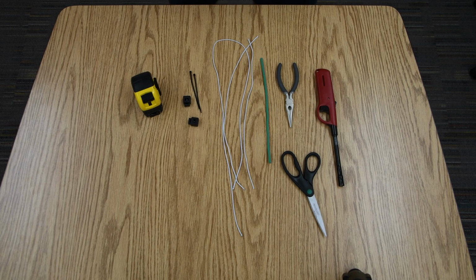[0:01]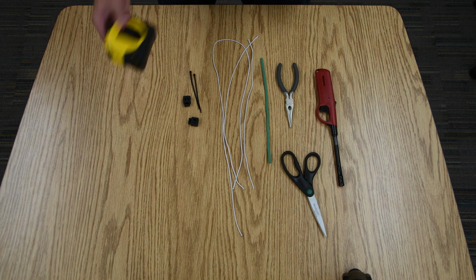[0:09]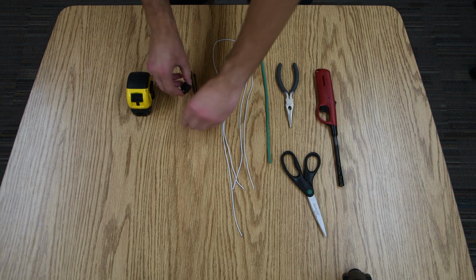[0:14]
Today, I'm going to show you how to make a homemade fitter for a disposable mask to keep yourself and others safer. First, what you're going to need: a tape measure or a ruler, two clamps,
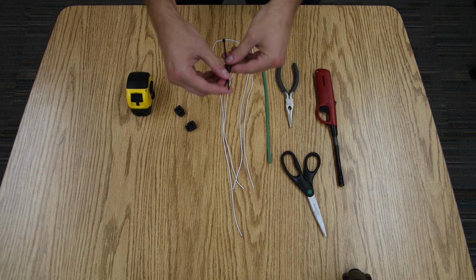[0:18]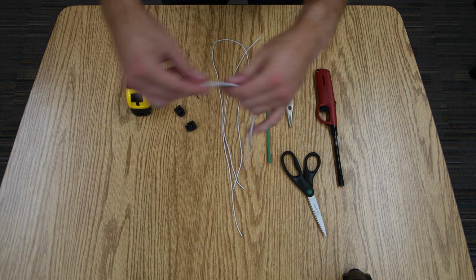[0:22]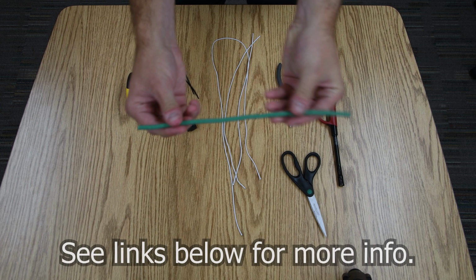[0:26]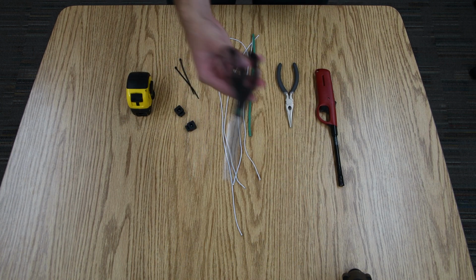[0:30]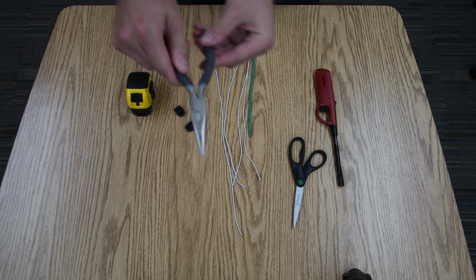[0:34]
two zip ties, some elastic material, some foam covered wire, a pair of scissors, some pliers with a cutter included, and lastly, a lighter.
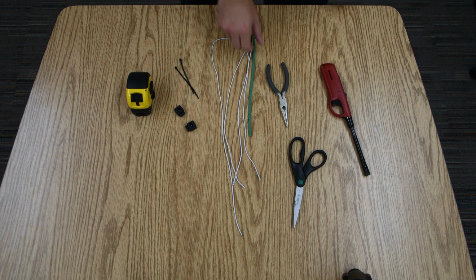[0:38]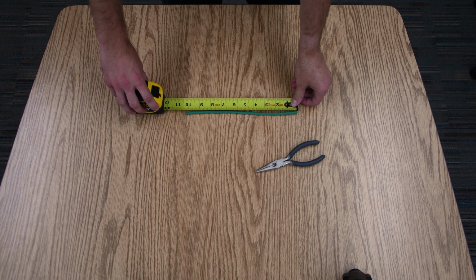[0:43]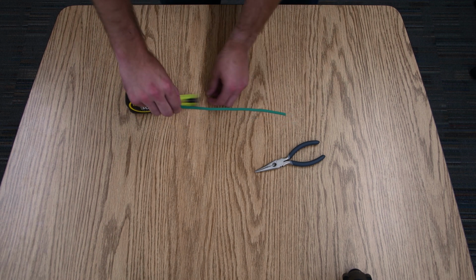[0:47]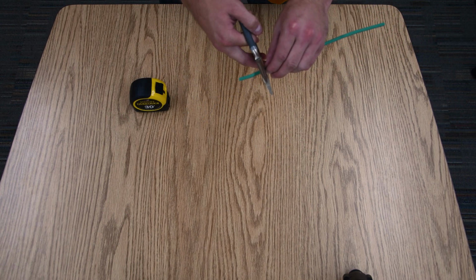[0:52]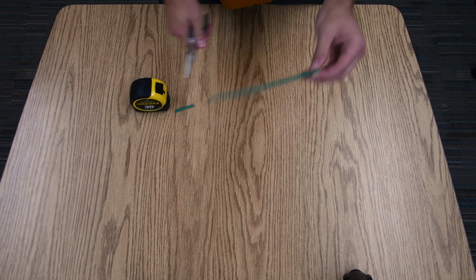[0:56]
To get started, we'll cut 8.5 inches of the foam covered wire. Get 8.5 right there about. And we're going to cut it using the cutting tool on the pliers because it doesn't work as well with a pair of scissors. Just like that.
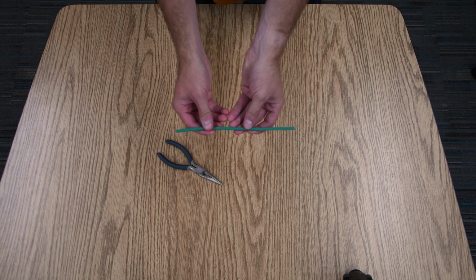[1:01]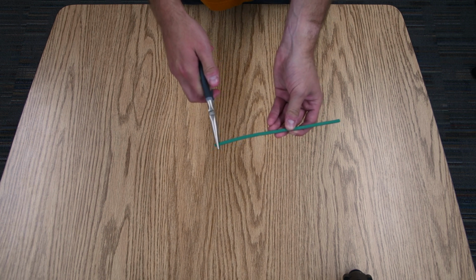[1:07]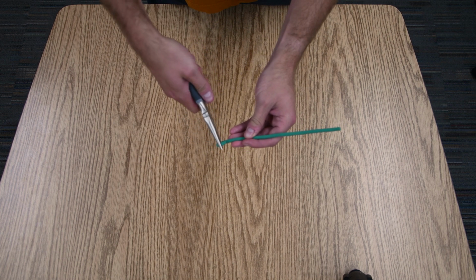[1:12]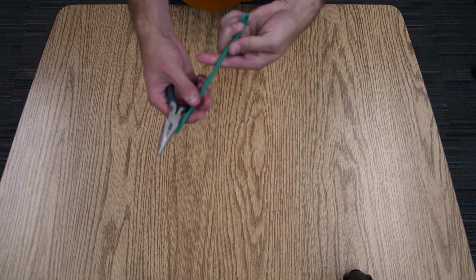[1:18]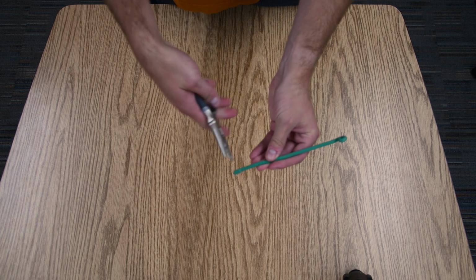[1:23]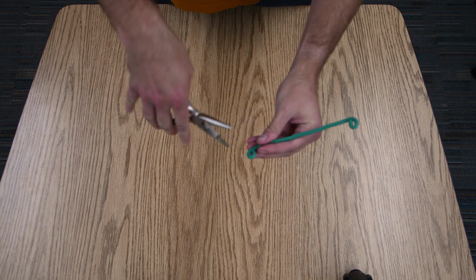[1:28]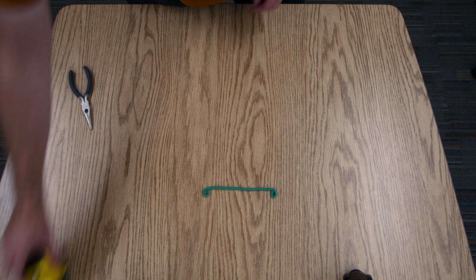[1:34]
And so next, what we're going to do is grab the very end with the pliers and just roll it inwards to make a loop. Close it shut just like that. There we go. We're going to do the same thing on the other side. Just like that. And when you're done, from the center of each hole should be about 6.5 inches.
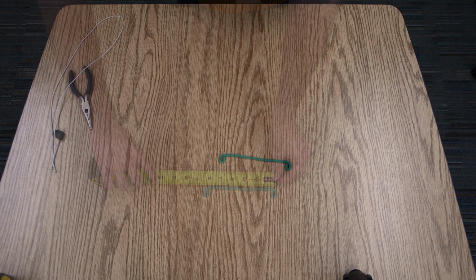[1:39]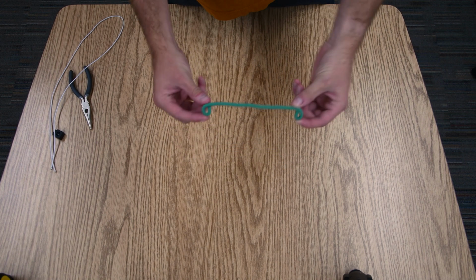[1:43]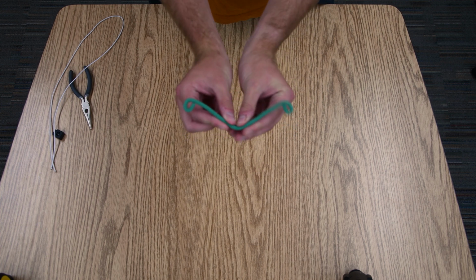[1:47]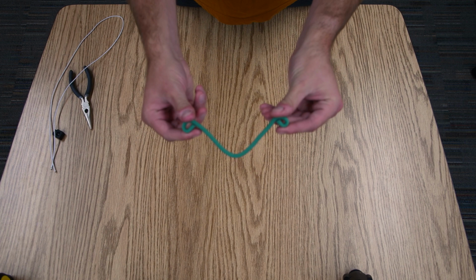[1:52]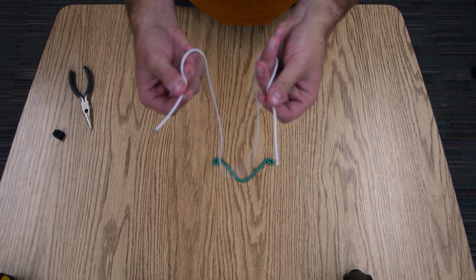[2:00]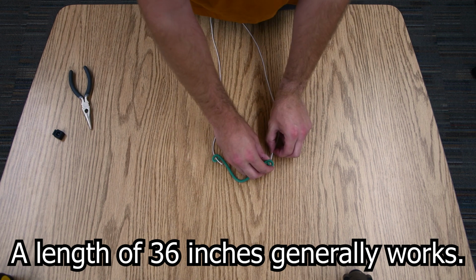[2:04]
So now we have completed the nose piece, and so with the loops faced outwards, what we'll do is we'll bend right in the middle for our nose, and now we have it about in the right shape. Next, what we'll do is add the elastic material. So here I have the elastic material. We're going to feed it through the loops like this.
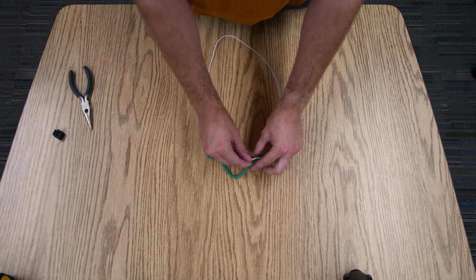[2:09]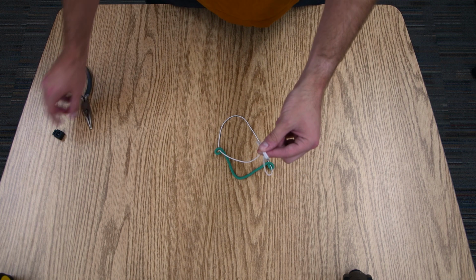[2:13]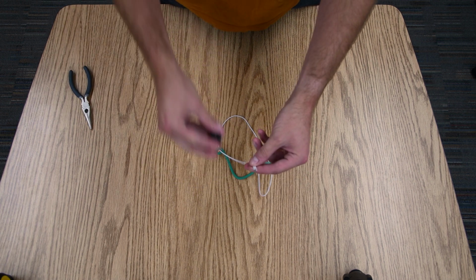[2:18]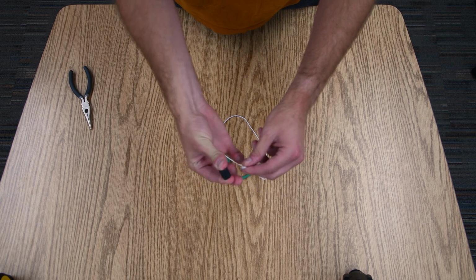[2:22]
Grab both ends. Here you go. Next, we're going to take a clamp and we're going to clamp the two pieces of elastic material together.
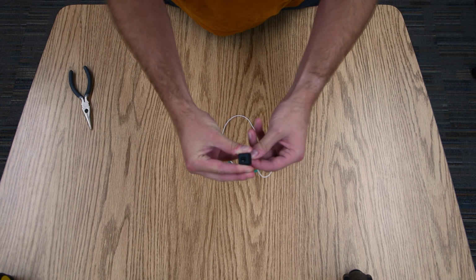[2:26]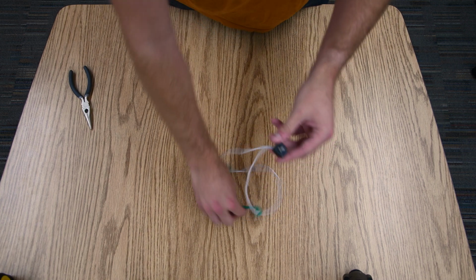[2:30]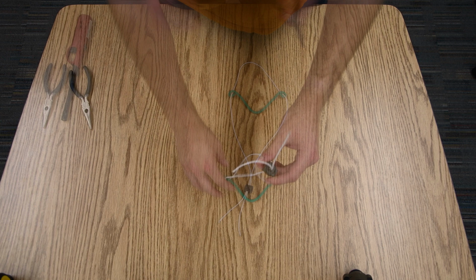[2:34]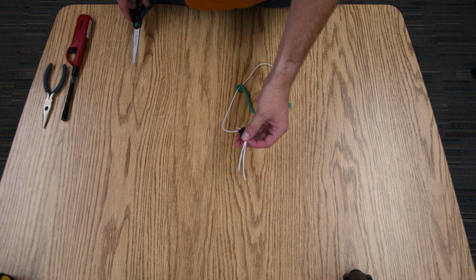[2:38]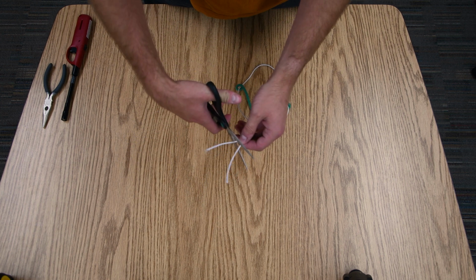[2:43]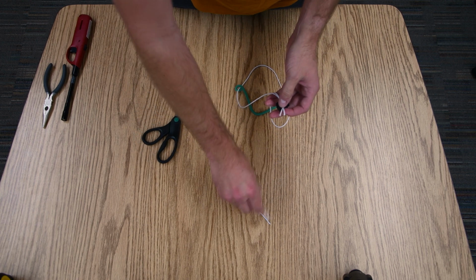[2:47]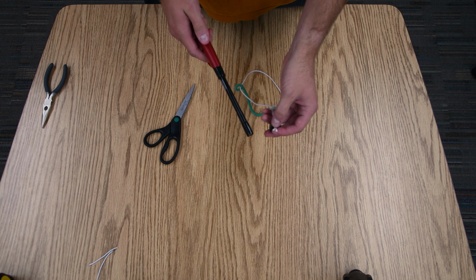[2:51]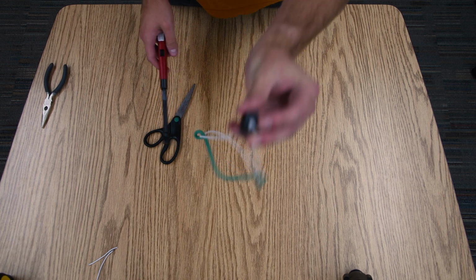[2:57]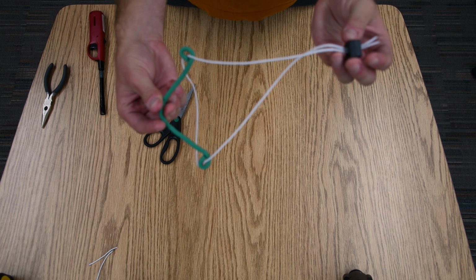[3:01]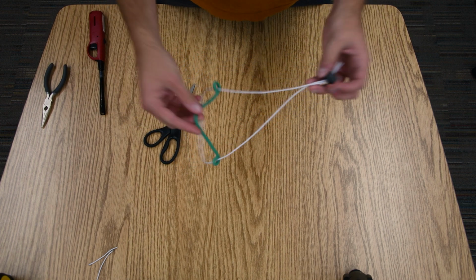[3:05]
Oftentimes, you'll have some extra material on the tag end. And what you can do for that is take a pair of scissors and just cut it. Get rid of the extra material. And then you can take a lighter and seal the frayed end of the elastic. Just like that. And so now we have our single band mask fitter complete.
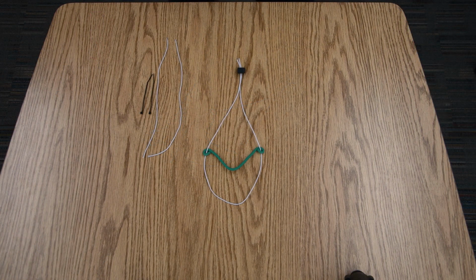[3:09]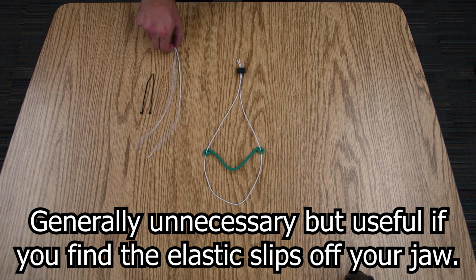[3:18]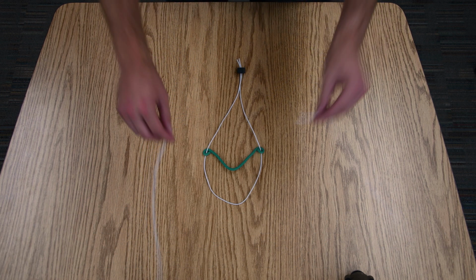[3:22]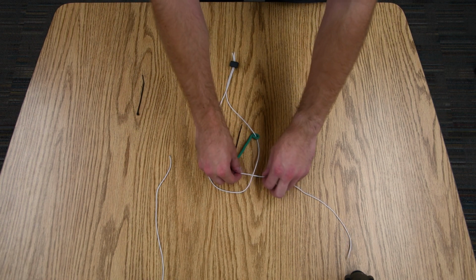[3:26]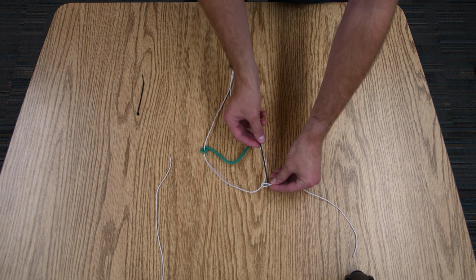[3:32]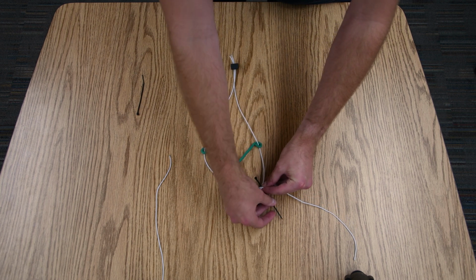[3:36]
Taking things a step further, you can get a better fit by making a second lower strap designed to go around the lower part of your head. You can do this by taking some more elastic material and connecting it to the bottom part of the current mask fitter with small zip ties. And so you make a loop and hold it shut with a zip tie.
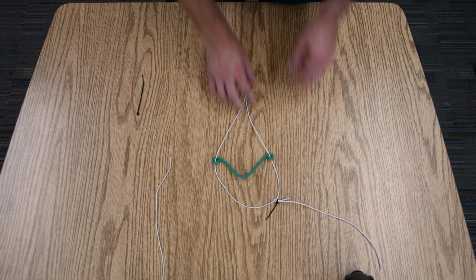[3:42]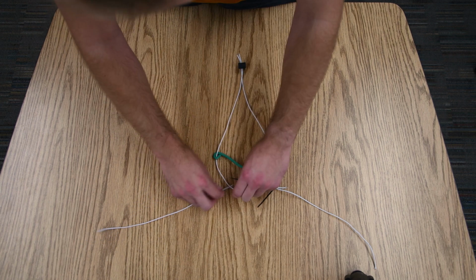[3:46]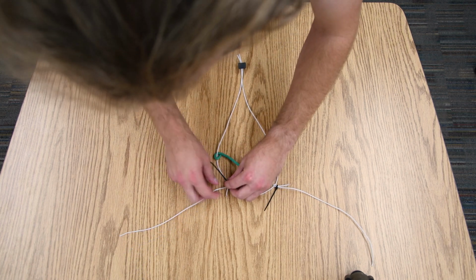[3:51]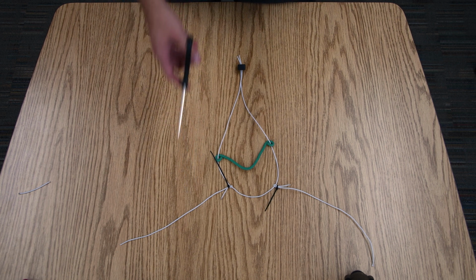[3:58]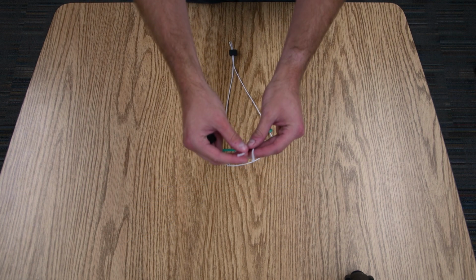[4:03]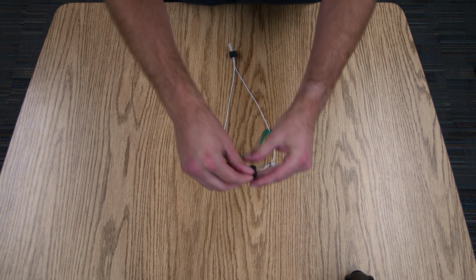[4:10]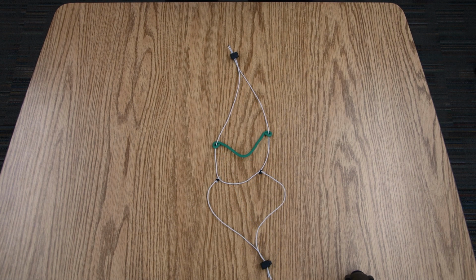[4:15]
And you want to do that on both sides. To clean things up, you can cut off the tag ends of the zip ties and the elastic material. Lastly, take the two remaining ends of the elastic and hold it together with a second clamp. And that is how you make a homemade disposable mask fitter.
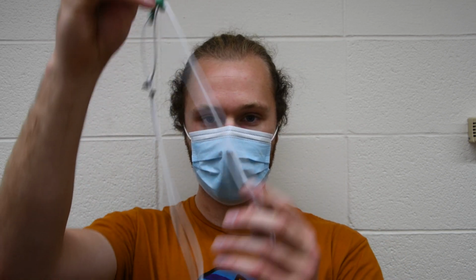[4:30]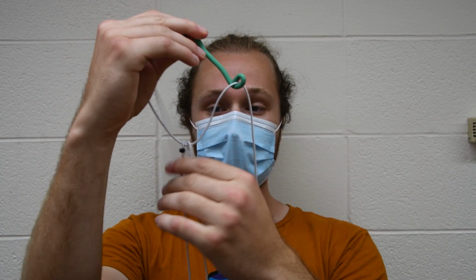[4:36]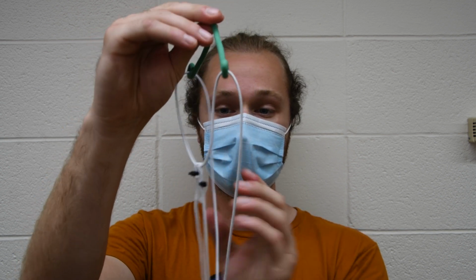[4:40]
Now I'm going to show you how to properly wear the mask fitter that we just made. So you're going to need a disposable mask and the mask fitter. The mask fitter has two loops. They both end with the clamps. The first loop is fed through the holes in the nose piece. The second loop is connected to the elastic material with the zip ties.
You want to take both loops and put your head through them. Just like that. Next, you want to take the nose piece and fit it around your nose over the mask. And the loops that come through go around your chin. Now you want to take the upper loop and cinch it tight to the top of your head.
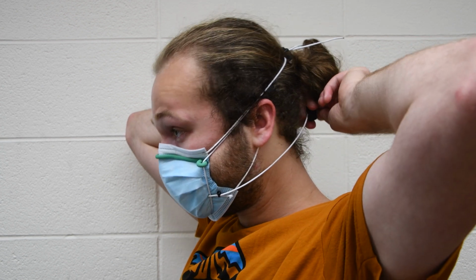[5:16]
You want to make sure that the wire is fit well around your nose and the lower elastic is fit well around your chin. So lastly, we're going to cinch the lower loop, and that just goes around your neck or the lower part of your head, and that helps keep things secure. And now you're good to go.